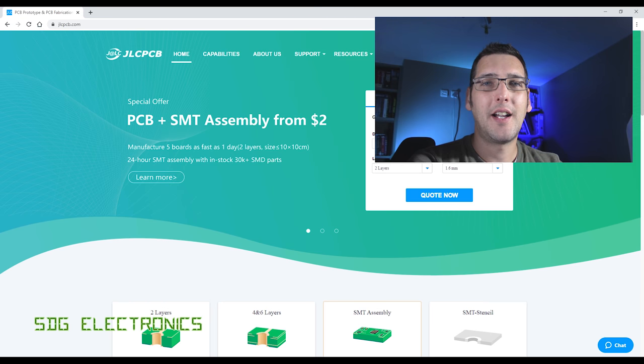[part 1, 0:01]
Hi, today I thought we'd continue with the LED ring light project, and we'll actually go through step by step, selecting the parts, the general topology, and actually designing the electronics to go on the LED ring light. So let's get started looking at the LEDs.
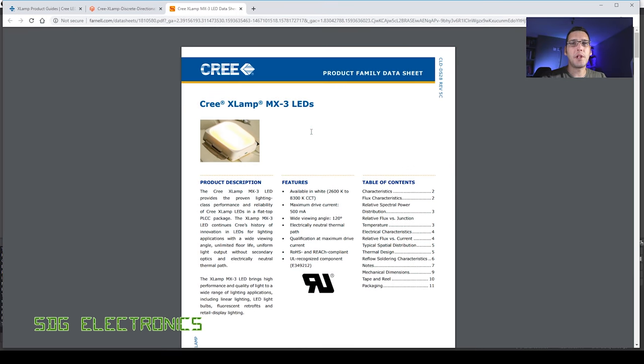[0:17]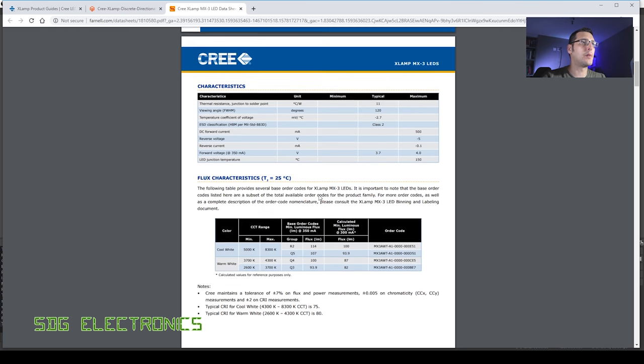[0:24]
So the LEDs that we used on the prototype board were these Cree XLamp MX3 LEDs, and we had 8 of them on the board, and driving them at 300 milliamps, we're getting around 100 lumens per LED, or 800 lumens in total. So that's a kind of benchmark that we want to aim for, because that was giving us more light into the microscope than any of the ring lights that I've got in the lab. And with the addition of some collimating lenses or some other optics, we'll increase that light output even further.
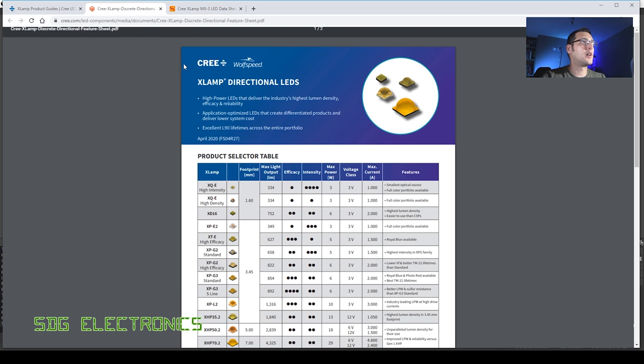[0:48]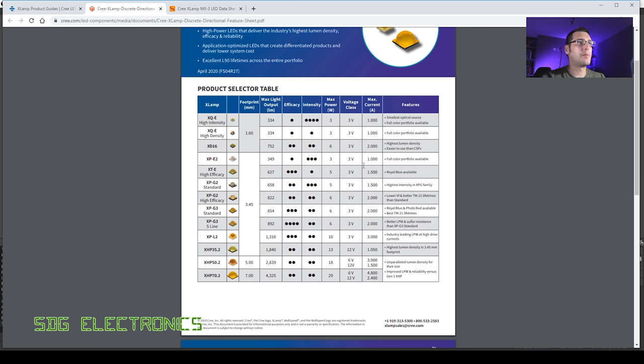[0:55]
So here we've got the Cree XLamp directional LEDs comparison table. And the thing that's important in this design is probably the efficiency, because we haven't really got the luxury for big heat sinks. It's going to be hanging off the lens, so we don't want loads of weight on this board. So what we've got here is a comparison table where we can quickly see the efficacy of various different types of LEDs. And immediately we can see these Cree XTE LEDs are pretty good.
And then we've got the XPG 3s in two different variants. So we've got the standard and then the S line. I suspect the S line LEDs are either a little bit more tricky to find or just more expensive. But these are looking pretty good. And at their test current, you can see here that we're getting LED outputs very close to actually what we're going to get from the entire design. So if we have 4 of these, then we're definitely going to be in the area that we want to be aiming for. So let's have a look at DigiKey and see if we can actually get hold of some of these.
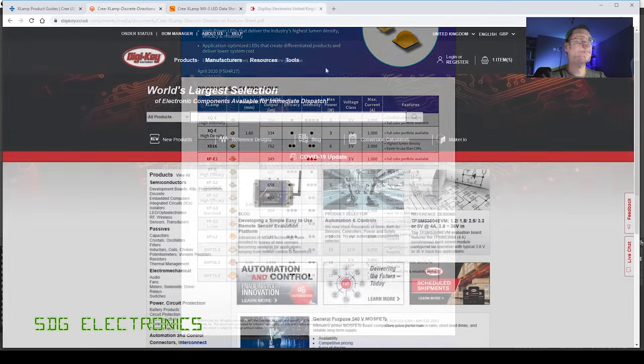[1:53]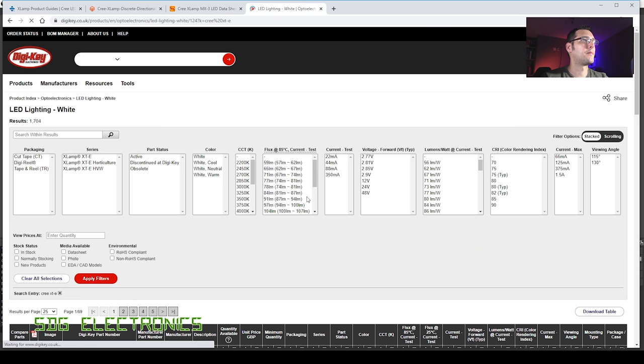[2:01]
So we'll start by looking at the Cree XTEs. And we want to be looking for active parts and not obsolete ones, and also in stock, because I do actually want to order these parts. And probably the most important thing that we've got here is the colour rendering index, because we do want to be able to identify colours quite well. Let's have a look at those with a CRI of 90, and you can see we've got a problem here. So we've got 0 remaining, about 85, and still 0 remaining. So those are looking pretty poor from DigiKey.
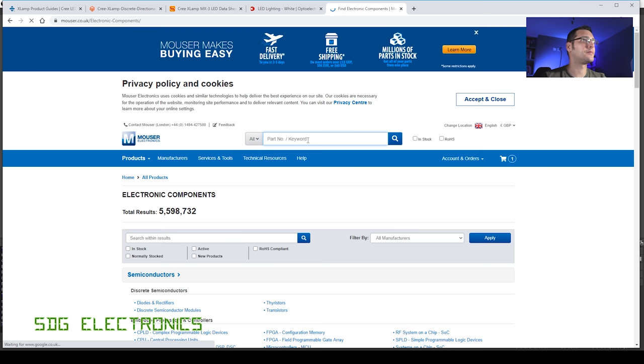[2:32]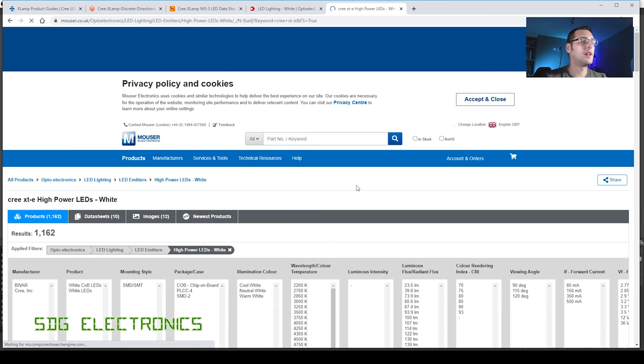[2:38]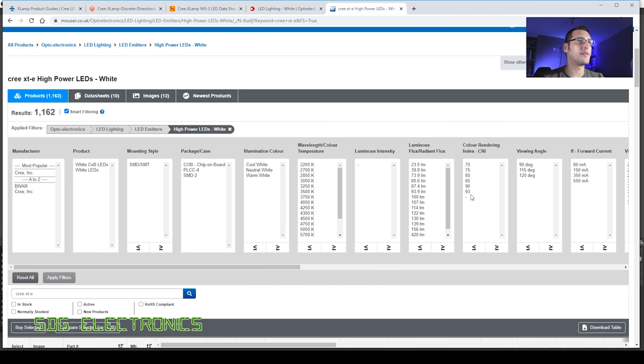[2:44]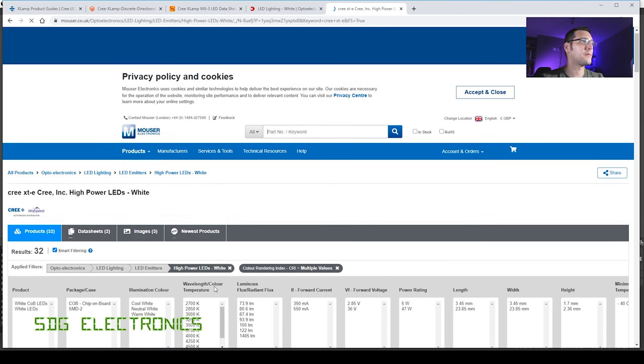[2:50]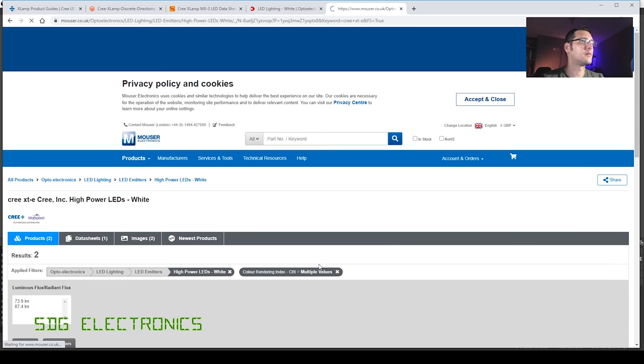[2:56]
We can also look at Mouser. But I suspect if DigiKey haven't got them, then Mouser won't either. Now, for whatever reason, these LEDs are always the most difficult to search for. I always spend ages trying to find the actual LED that I want to use. So, again, 90 and 93. And have they got any in stock? And they do actually have 2 of these in stock.
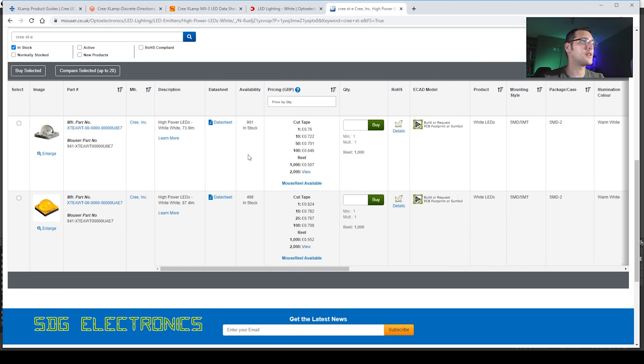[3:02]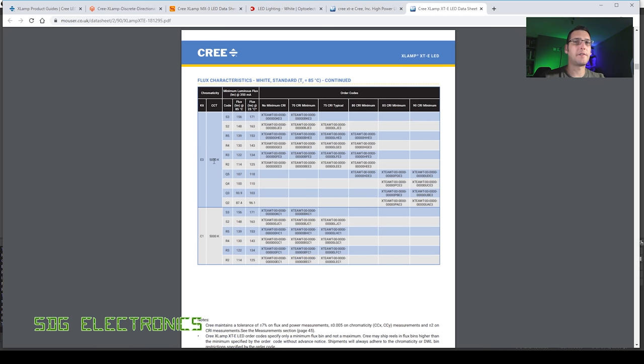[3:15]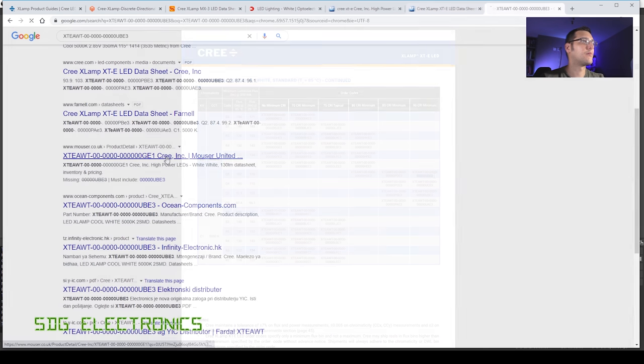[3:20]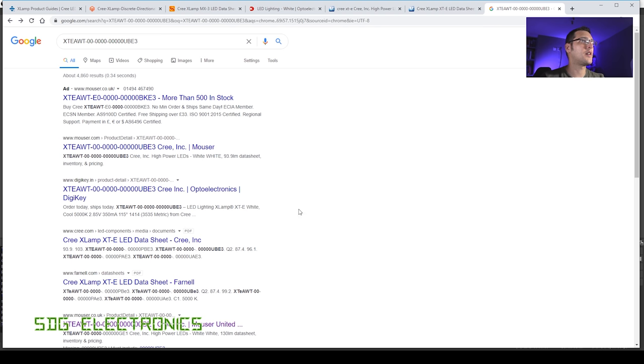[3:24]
Let's have a look what these are. Warm white and warm white, so it's probably not going to do the job. We do want something in the region of 5000 Kelvin so that we get the colour temperature correct, so I don't think these are going to be correct. So here are the 5000 Kelvin items, CRI of 90. No, so it's not looking good for the Cree XTEs.
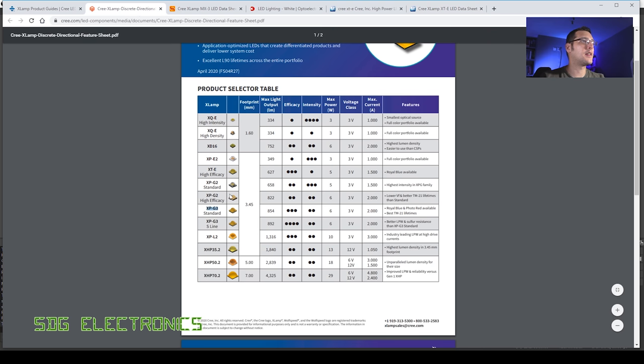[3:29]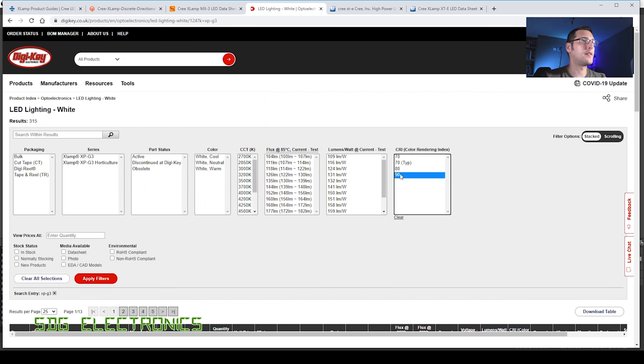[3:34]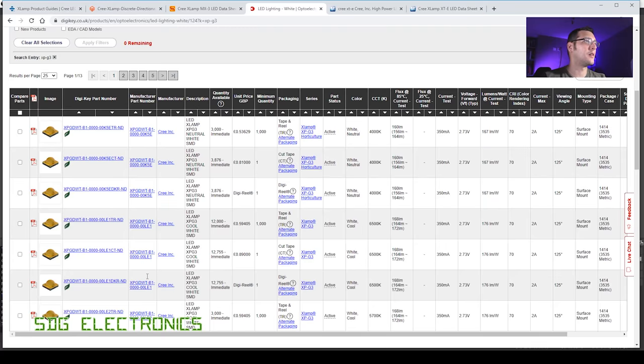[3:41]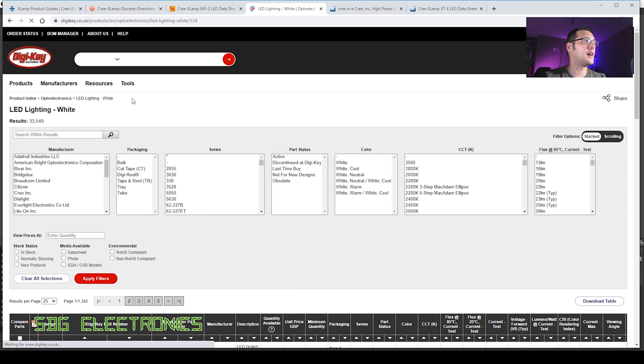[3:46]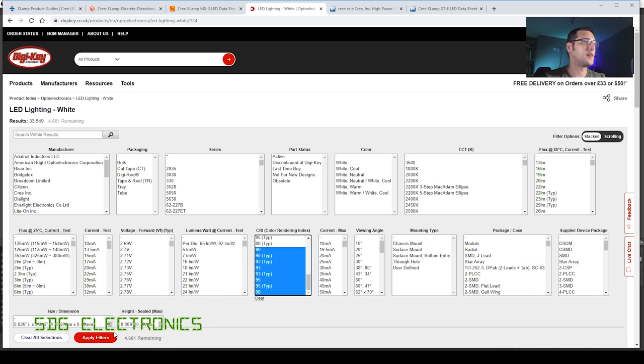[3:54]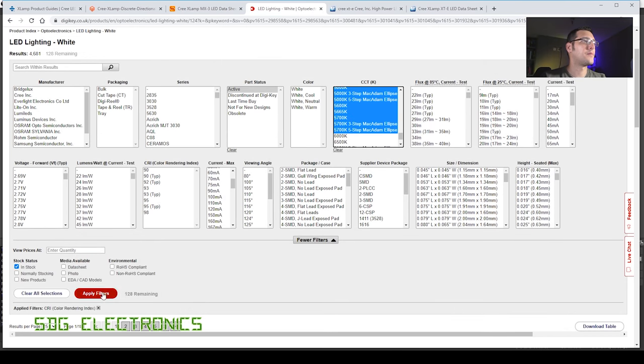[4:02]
Let's try looking at the next ones, which are the XPG3s. And again, CRI of 90, 70 remaining. Active item 62. Have we got any in stock? Nope. So that's a little bit frustrating. Let's have a look at the DigiKey search instead and just see if they have actually got anything with a high CRI. So we've got some very high CRI devices on here. And we want active parts in stock. 128 remaining. Let's see what we've got.
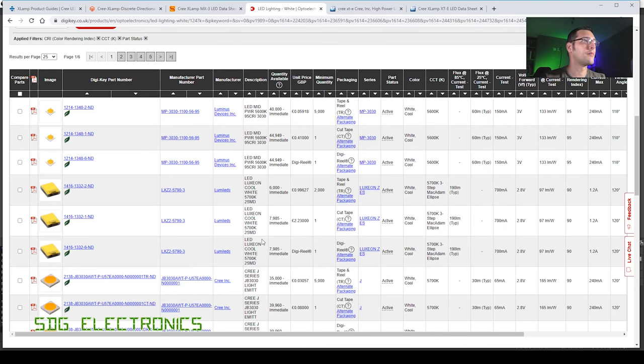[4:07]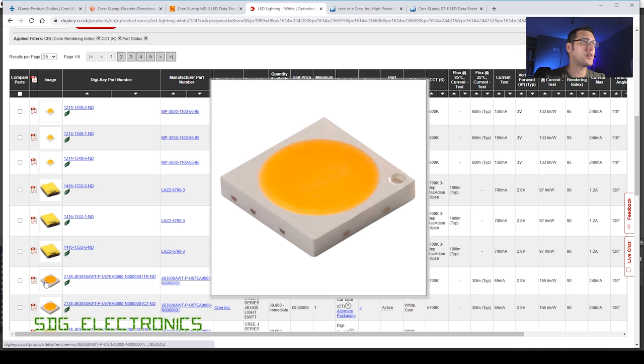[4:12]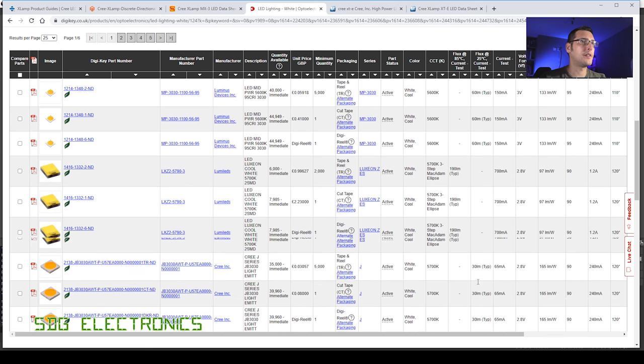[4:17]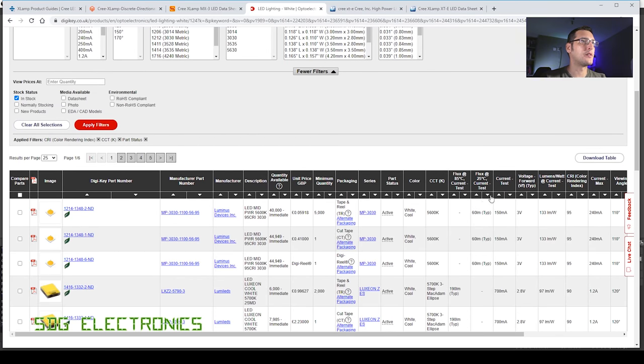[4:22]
So we've got some from LumiLEDs. We've got some pretty small ones, which are these Cree ones. They're not really in the right region here. 30 lumens isn't going to do the job. Let's also sort by that. So we've got a couple of options here. Unfortunately, none of them are perfect, but we've got this Luxeon Z LED, which only has an output of 190 lumens, but it has a really good colour rendering index of 90 and is relatively cheap, £2.23, so we can have 4 of those and it not be too expensive.
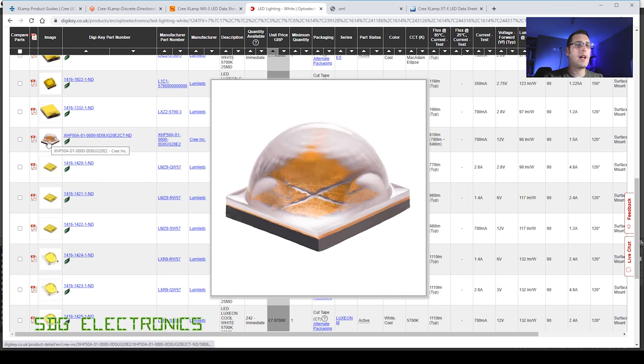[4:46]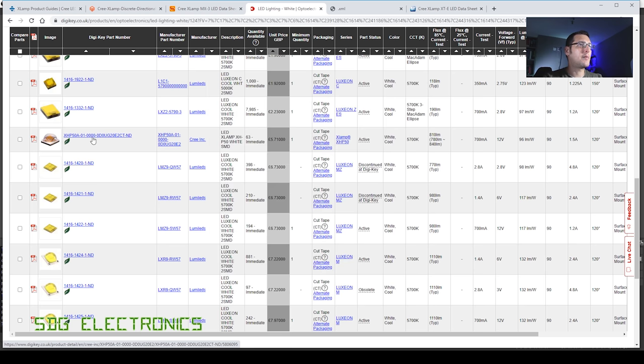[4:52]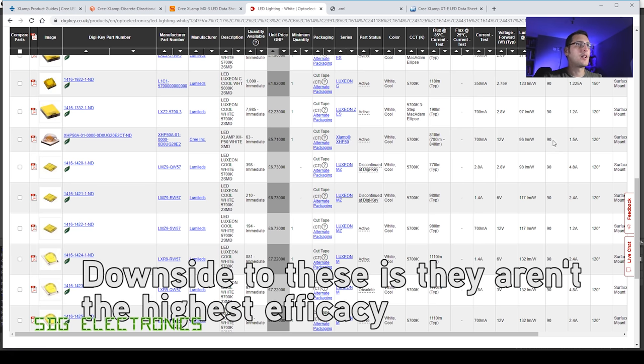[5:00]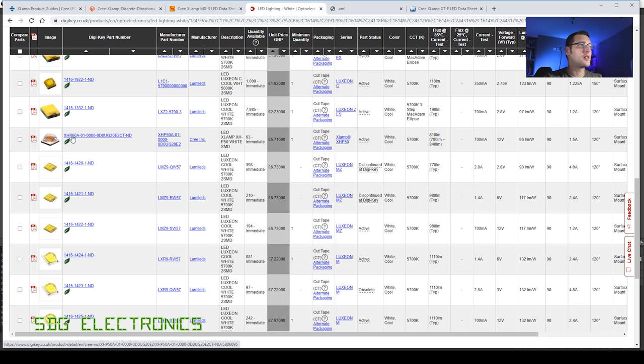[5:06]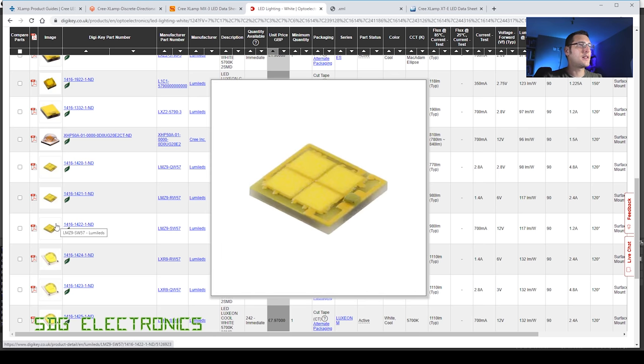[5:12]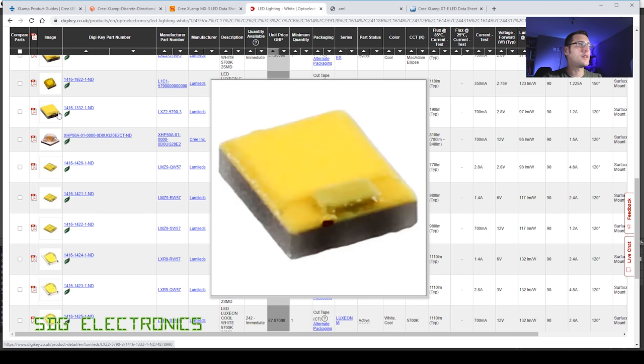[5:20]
Next choice would be this Cree XHP50, which I think is the one that was in that torch that I reviewed quite a long time ago. These are really high output LEDs, way more than we need, but possibly what we could do here is just underdrive it and again we'll get a decent colour rendering index. And I know that there are plenty of optics available for the Cree XHP50s. The other option here is these Luxeon LMZ9s, which basically just look like four of the Luxeon Z dies on one chip. These are a little bit tricky to handle, along with the Luxeon Z. They're really quite small. So I think we're going to look at this Cree XHP50A.
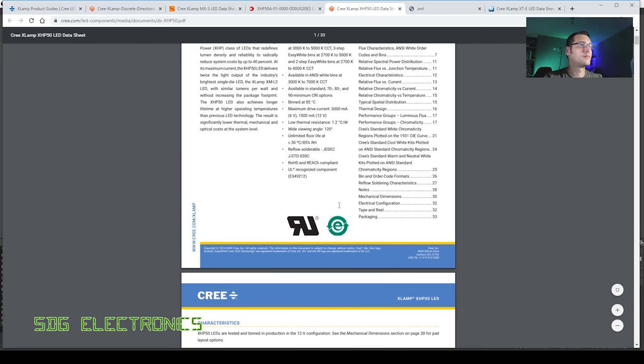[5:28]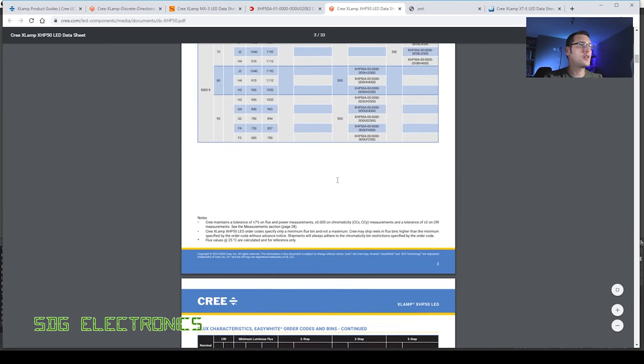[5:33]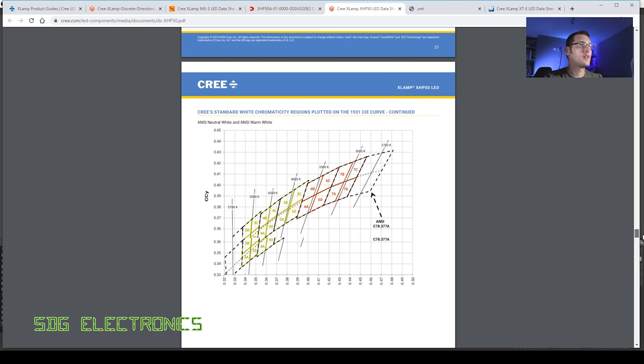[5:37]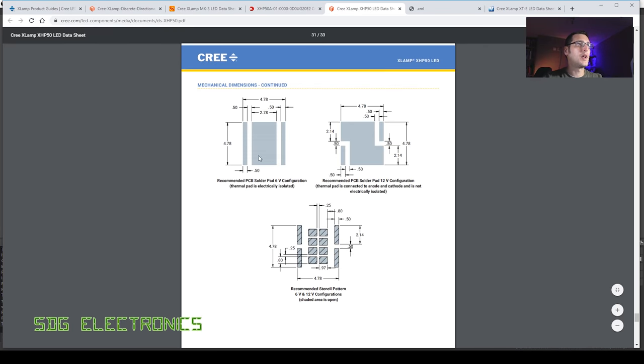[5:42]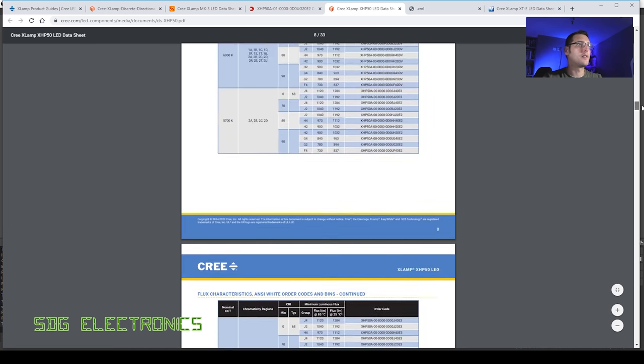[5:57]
And so it looks like it's got two banks of LEDs in it. No internal schematic of the LED. But here you can see you can either have the two lots of LEDs in parallel, so 6 volts, it looks like two dies by two dies, or you can have them in series to give a 12 volt input voltage at their rated current. So these could do the job.
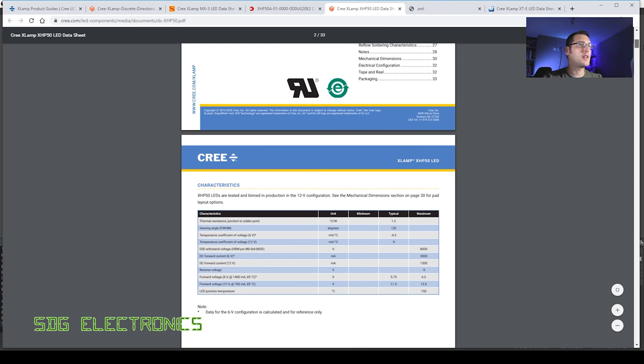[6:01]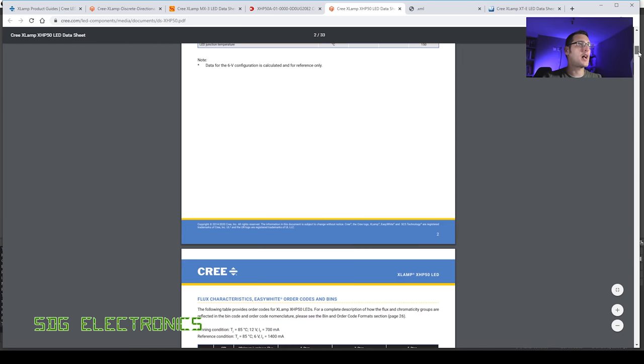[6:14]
Again, we probably don't need to drive them anywhere near their maximum, and we wouldn't be able to dissipate all that heat anyway. But these are quite big devices, 5 by 5 millimeters or so. So quite easy to handle. The footprint shouldn't be too much of a challenge. Let's see if we can find some optics for this part.
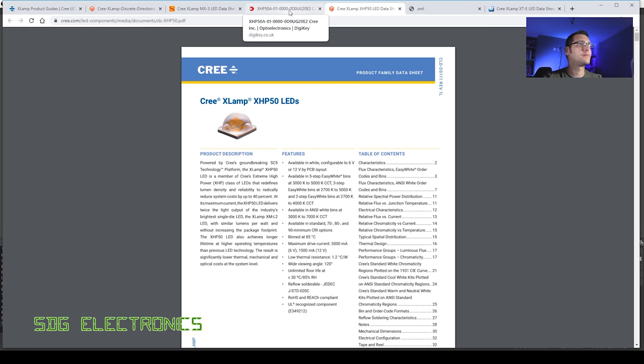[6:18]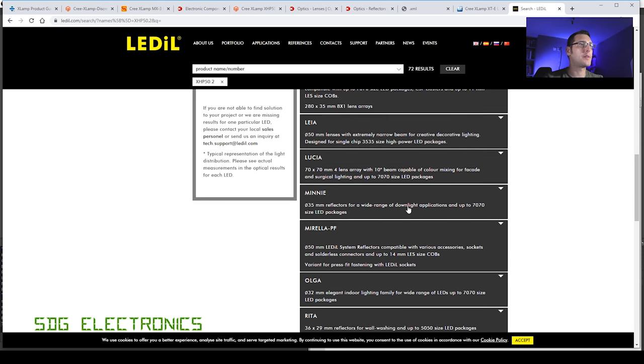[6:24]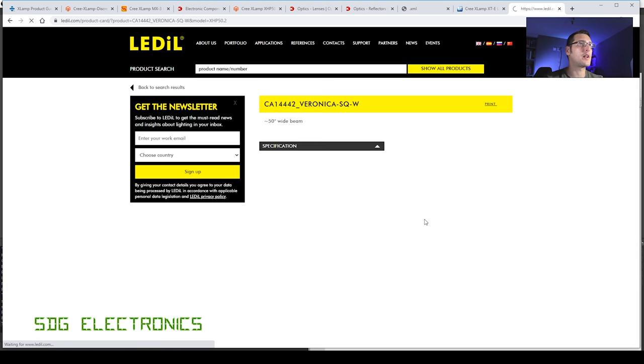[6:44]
So for the optics, we can look on the LEDIL website. They tend to do most of the optics for these parts. We want to look for something that's relatively small in terms of the lens size. So we've got some here that are 22 by 22 millimeters or so. 50 degree beam, so it's a little bit wider than probably what we need, but it's a frosted lens, and we saw previously that gives us the best results. Let's see if we can actually get hold of one of these.
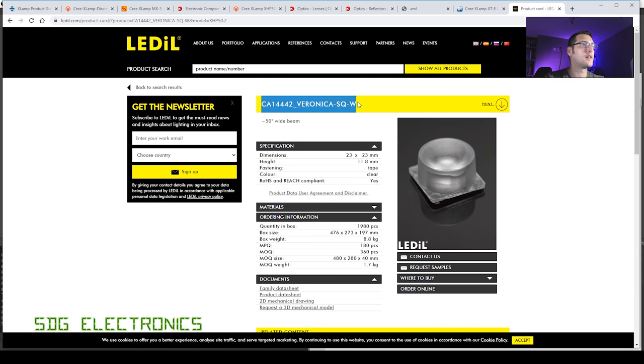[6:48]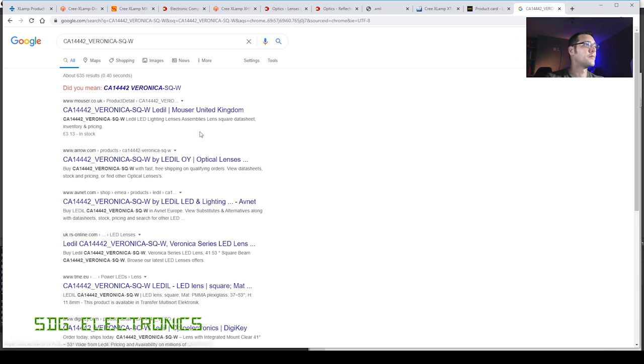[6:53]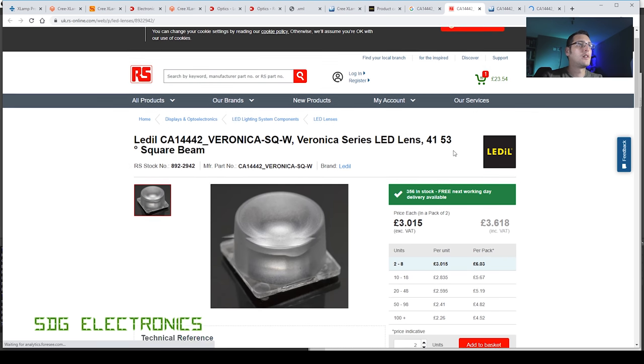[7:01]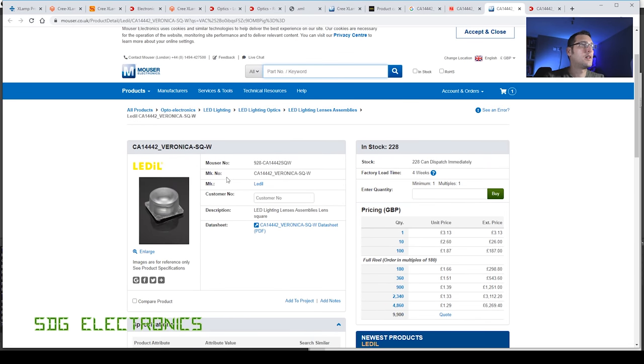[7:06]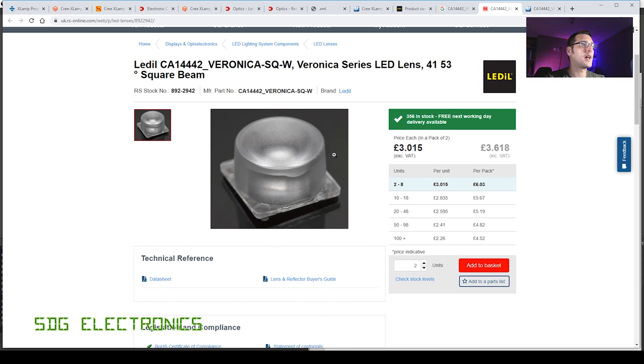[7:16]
It basically looks like this. See if we can find it anywhere. Mouser and RS and DigiKey as well. So they've got those. Plenty in stock at RS. Plenty in stock at Mouser. And none at DigiKey, so that one, that looks probably fine. I think we're quite good with that. That looks quite reasonable. It looks like you heat stake this into your PCB as well, so quite easy mounting. So we'll add that to the list.
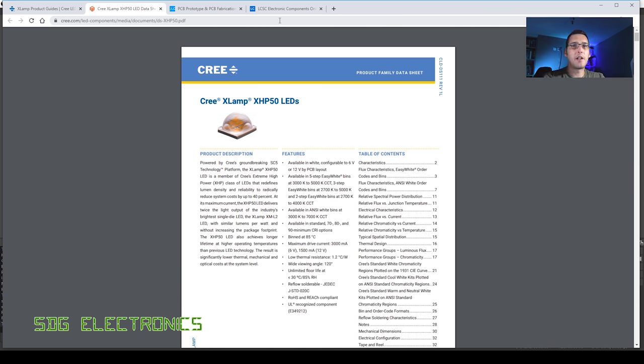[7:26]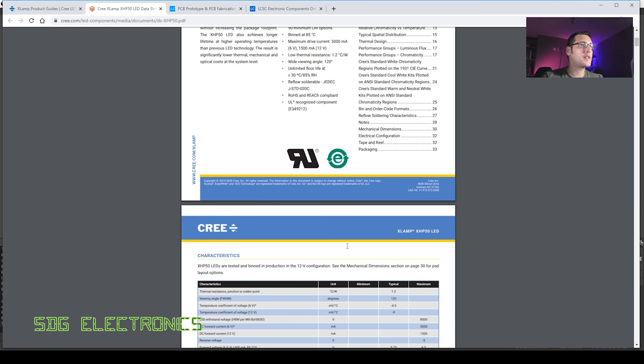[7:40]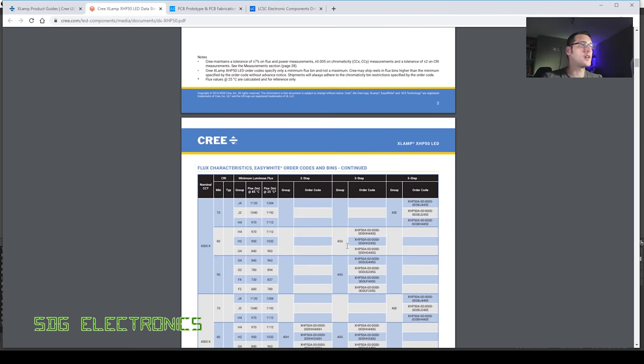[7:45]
So now we can start looking at the actual electronics. Now that we've chosen our LED, we know roughly how we want to be able to drive it. We definitely don't need to be able to drive this LED at 3 amps. We're just not going to be able to dissipate that kind of heat on the PCB. Let's have a look and see if we've got any curves for what the luminous intensity is versus current. We may need a slightly different data sheet for this.
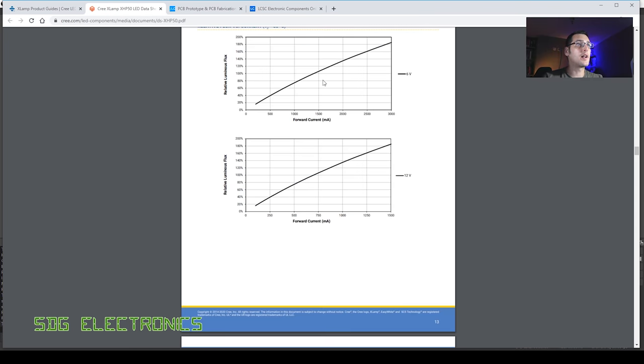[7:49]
So actually it looks like at 3 amps we're massively overdriving this LED. It's got the relative luminous flux here, which is basically compared to the value that they've given in the data sheet. So 800 lumens at 100% is actually 1.5 amps at 6 volts. So if we know that, then we know roughly we can scale that back. Even 50% is more than sufficient.
So actually we're probably fine just driving this LED with a standard 700 milliamp LED driver. And we know that we're going to be able to get about 50% of that light output. So we'll be able to get 400 lumens from one LED, which is pretty good. So now we know we need to aim for something in the region of 0 to 1 amps. With 6 volt per LED, we can start looking for some driver chips.
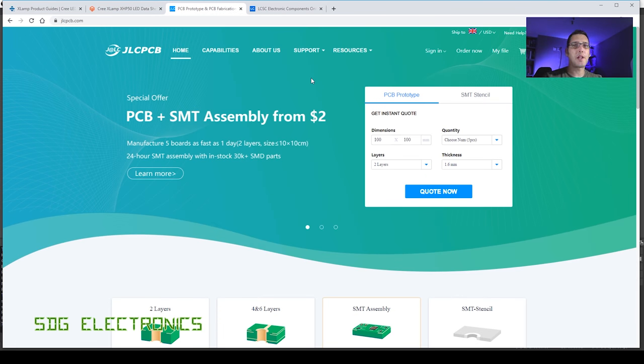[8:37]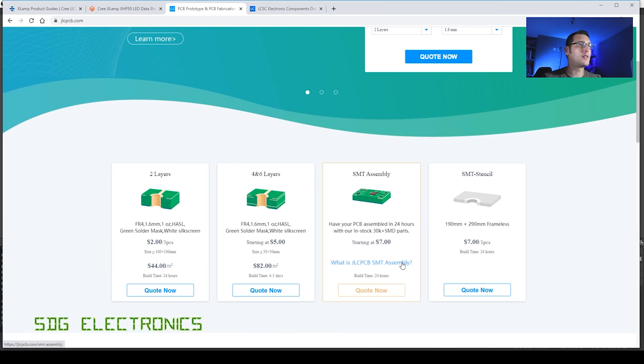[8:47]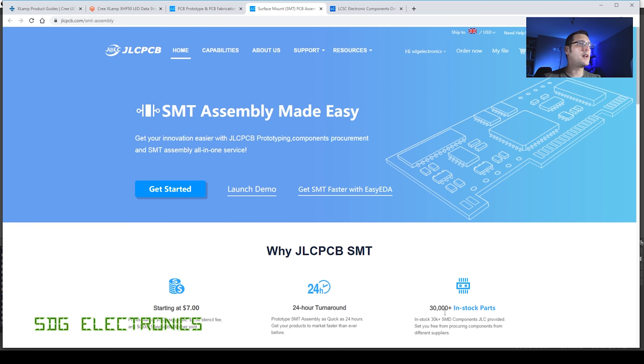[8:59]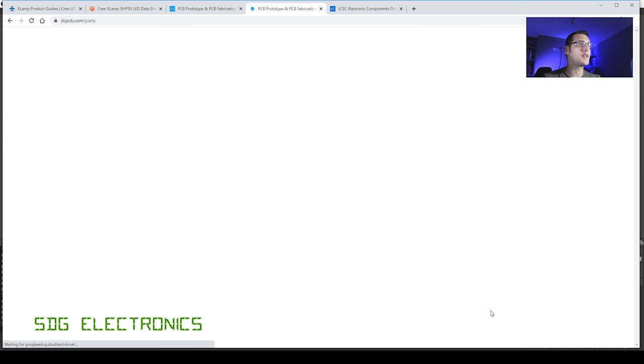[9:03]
So I've brought up the JLC PCB website because most likely I'm going to try and get as much of this PCB assembled as possible. We're going to order the boards from here and try and use parts mainly that they've got in stock. I don't know how feasible that actually is, and it will be quite a simple PCB, so it may not be too much of a burden to assemble. But if you go onto this page here, you can see what parts they've actually got available for assembly.
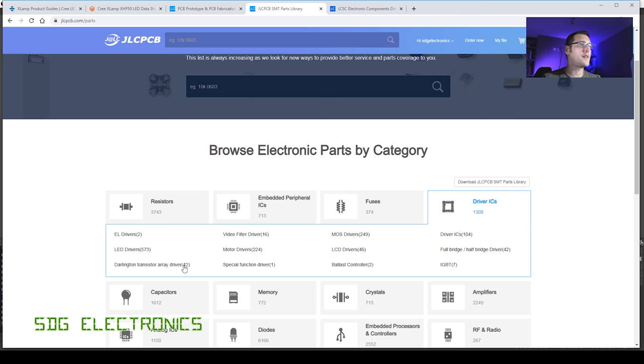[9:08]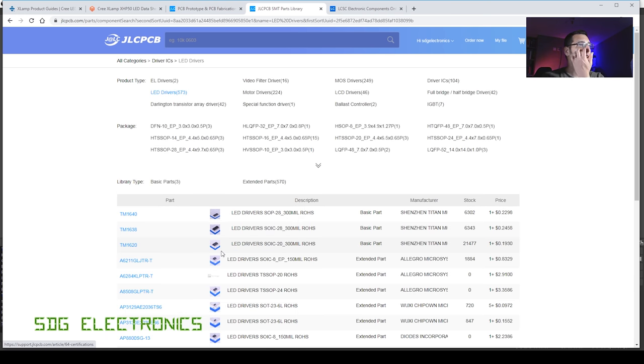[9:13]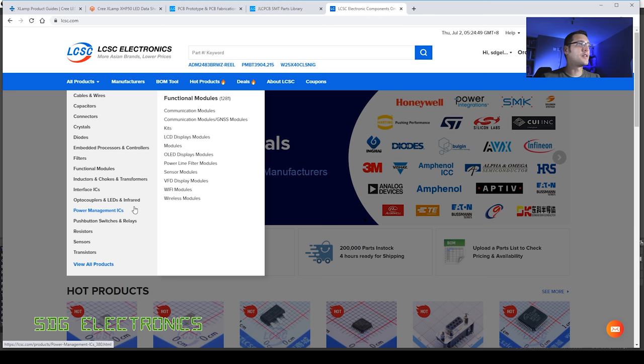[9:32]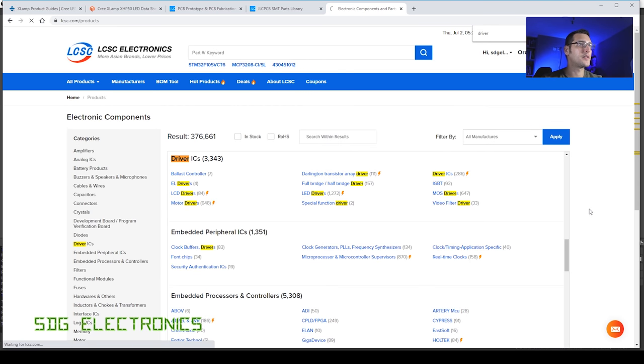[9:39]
Now, you can sort of do a search in here. So we've got driver ICs, and then we've got LED drivers. We've got 573 available. But the search at this point then is quite poor. You don't really want to be searching for parts on here. You can't see what's in stock because you can't search by the amount of stock that they've got. And as you can see, they often have parts that aren't available. So let's have a look at LCSC. And unfortunately, they don't have everything that they have at LCSC, but often you can see what kinds of things they're going to have. LED drivers.
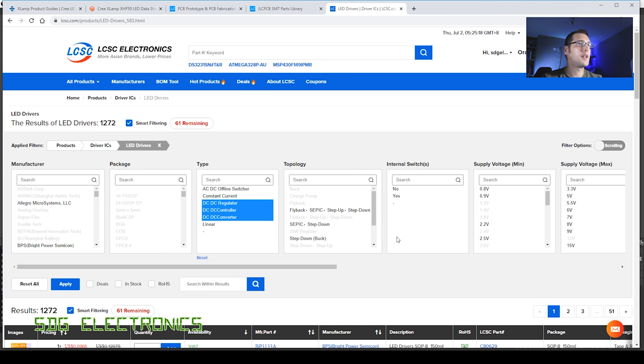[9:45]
And we're doing DC to DC conversion. Now, one thing that we do want to think about is the DC to DC converter design. Almost certainly we want a DC to DC in terms of the efficiency, but we want to make sure that we don't then see any of the ripple on the camera that we've got attached to the microscope. So we do want to try and use something that's relatively high frequency so that that doesn't show up in the actual image.
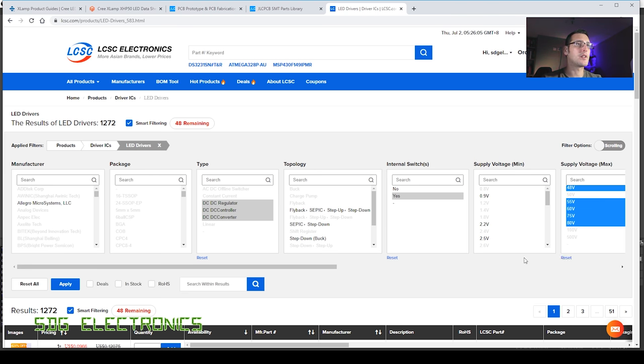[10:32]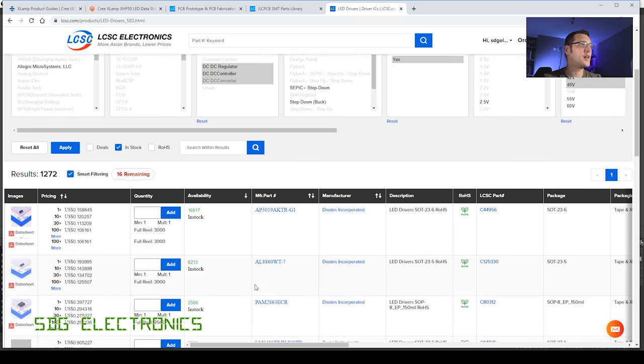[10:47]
Now we picked the DC to DCs with internal switch. We probably do want these because we're probably going to end up with four LED drivers on this PCB, I would imagine. And we want LED drivers with an input voltage of at least 15 volts, because that means we can run two of the LEDs in series, so we're already off to a good start there. I'll actually narrow down that selection because these are probably ones for mains powered LEDs. Let's leave it at 48 volts in stock and see what we're left with here.
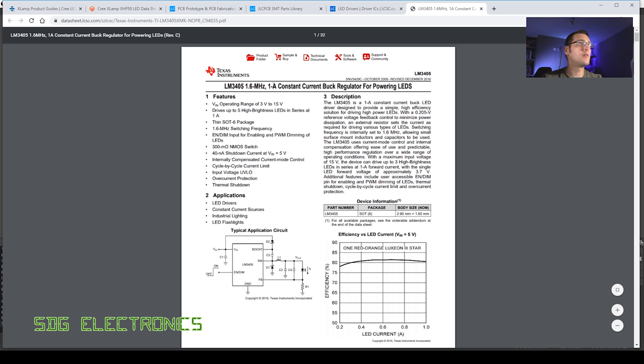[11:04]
So we've got one here from Texas Instruments. I'm first of all looking out for the bigger names and the ones that have any simulation capabilities. TI always have the models available to look at on the website. Let's have a look at what this actually is. So this is a 1 amp output, and we do have a dimming pin, so we would be able to decrease the brightness. One thing to note about that dimming pin is it does ideally want to be an analog input so that we don't then superimpose our lower frequency PWM waveform, which then again will show up on the camera. Alternatively, if it is PWM, which it does look like, we want to be able to feed in a relatively high frequency. So let's see what this datasheet is saying. So 1 amp, 3 to 15 volts, so we'll be able to run two of those LEDs in series.
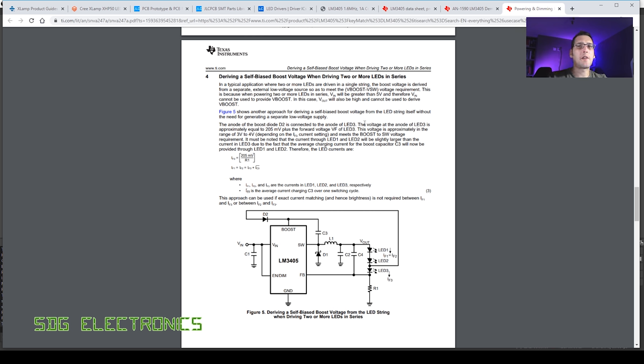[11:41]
So unfortunately, after having a look through some of the datasheets, it looks like it's not quite as straightforward with this device because it needs a very specific voltage on the boost pin. And when you've got LED arrays, which is basically what we're going to have, it's a little bit more difficult to derive that, and it doesn't look like we're going to be able to do that with these LEDs that need 6 volts or 12 volts. So we're going to have to can the idea of the LM3405.
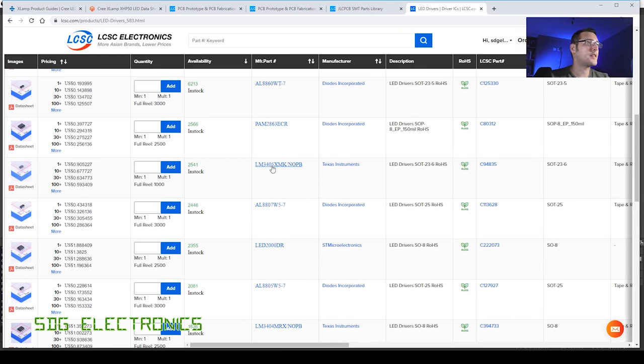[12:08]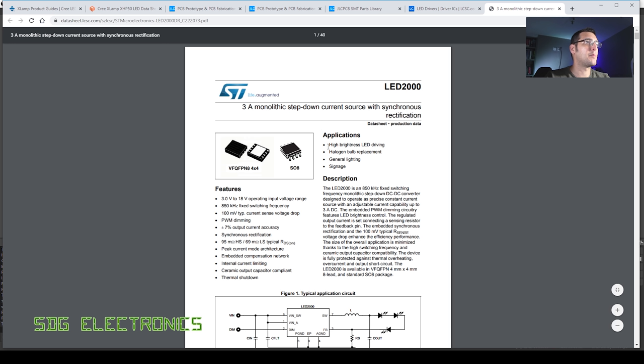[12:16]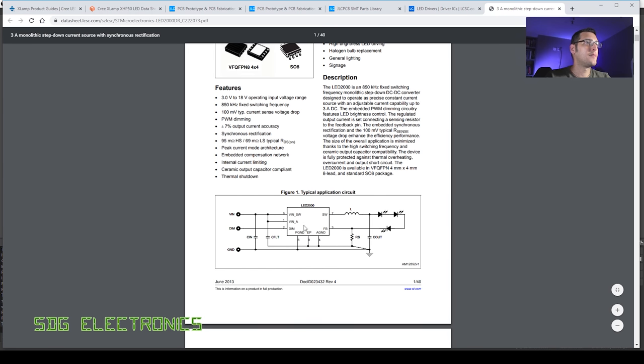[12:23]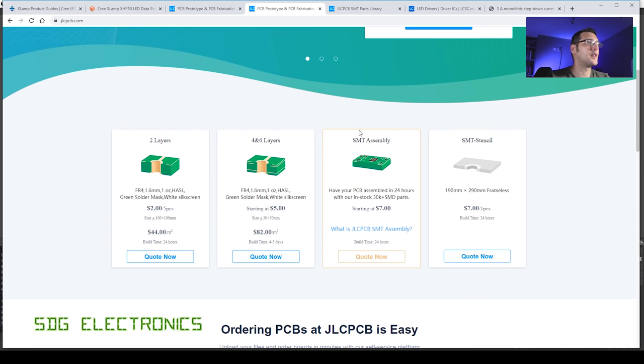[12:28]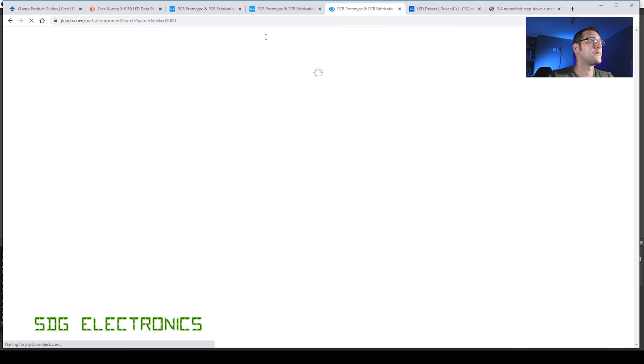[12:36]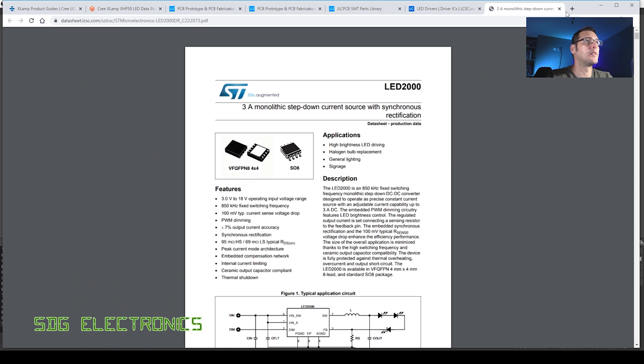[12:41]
So other parts in the list are the LED2000DR. Let's have a look at that one. That's a 3 amp step down current source, 850 kilohertz switching frequency. And the topology looks fairly straightforward. Let's see if they've got any of those actually in stock. So that was the LED2000. And so no, unfortunately no stock, so we'll cut that one out.
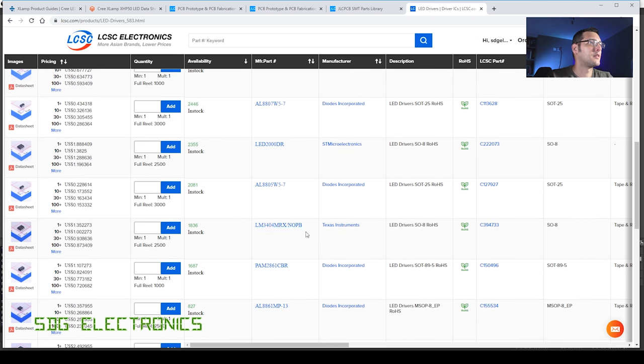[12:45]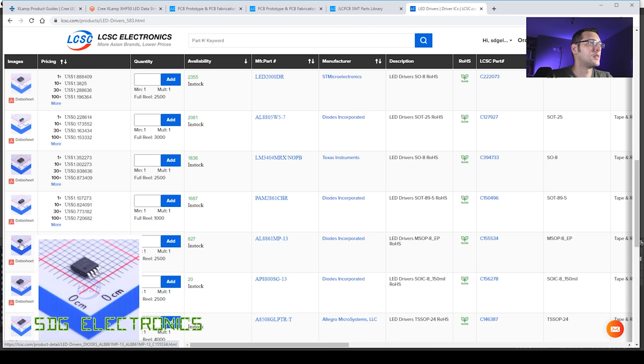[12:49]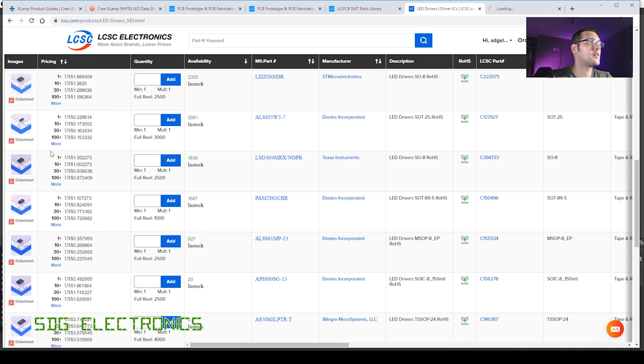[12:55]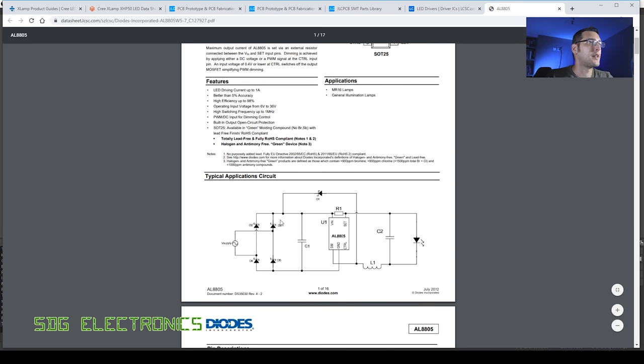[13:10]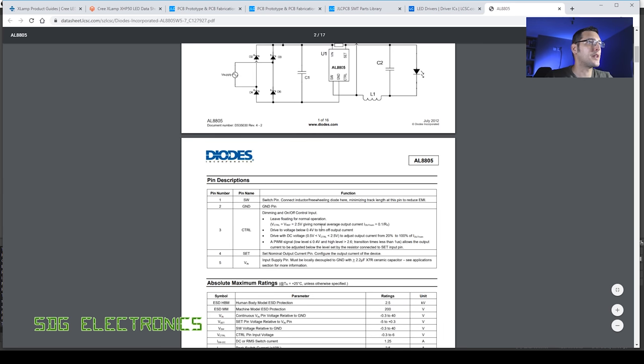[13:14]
Got some here from Diodes Inc. See what this part is. It's quite a low cost device, 22 cents. 6 volts all the way up to 36 volts, so we could even drive all four LEDs in one go with this one. Switching frequency up to 1 megahertz and up to 1 amp. So actually, this one looks like it could do everything. We'd only need one of these parts in the entire design.
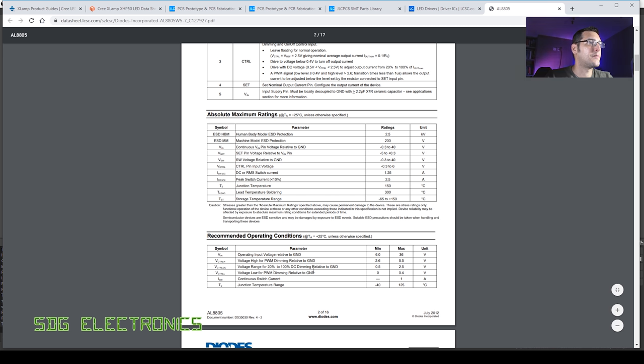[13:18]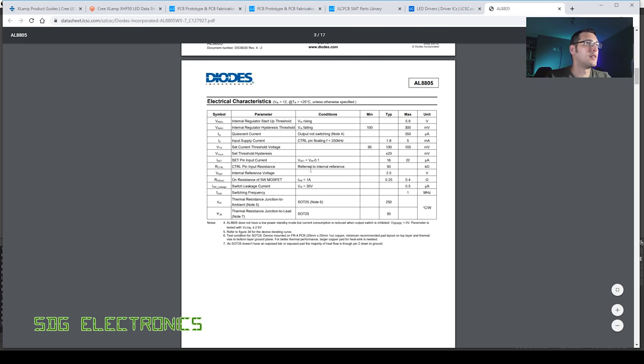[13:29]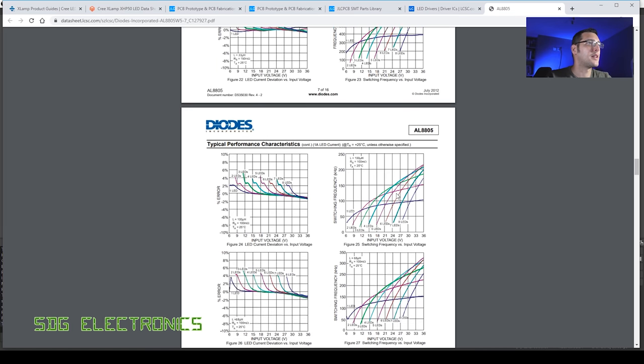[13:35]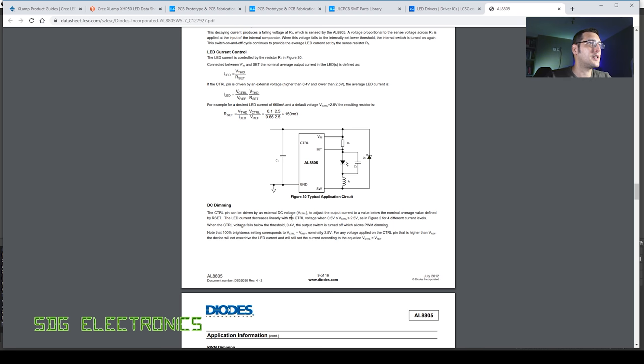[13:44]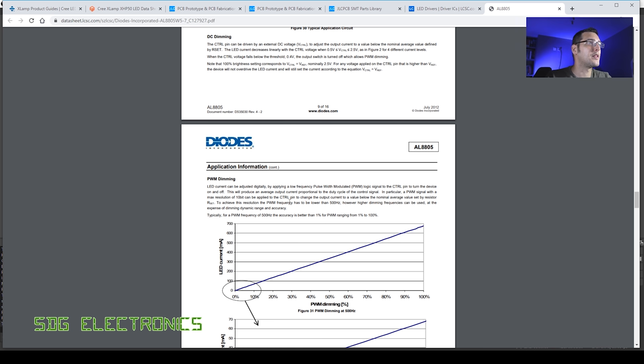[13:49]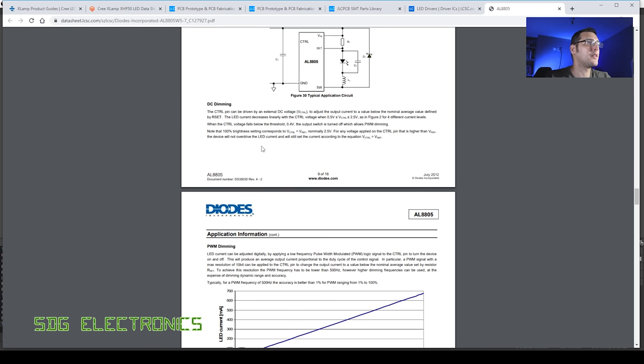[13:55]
Dimming range 20 to 100%. Now, in terms of the dimming, actually, I'm only likely to need two dimming levels, 50% and 100% probably. We might want to tweak the value, but we can usually do that with the current sense resistor. I don't really want to have a microcontroller or any software on this board. I just want it to be a standalone ring light that just works. DC dimming. So it can be done with a control voltage rather than PWM, so that's pretty good. Because, as I said, with the PWM dimming, we may end up seeing that on the camera. So this actually looks like quite a decent device.
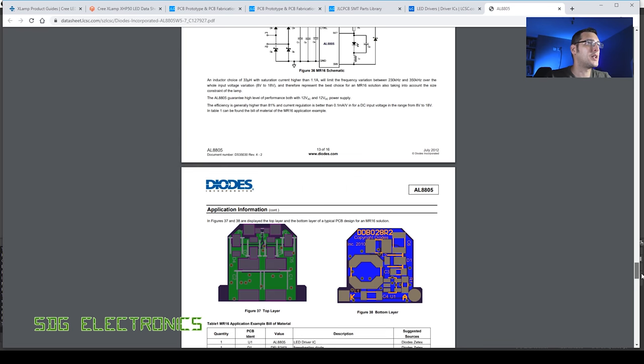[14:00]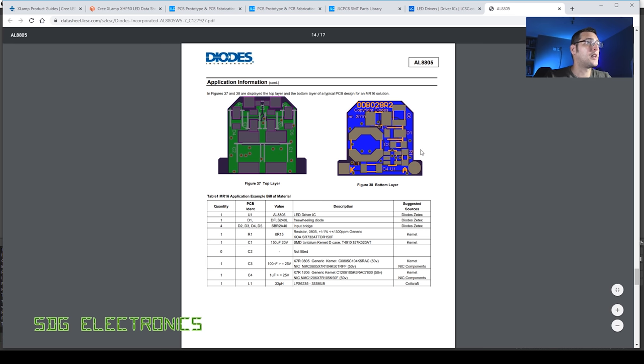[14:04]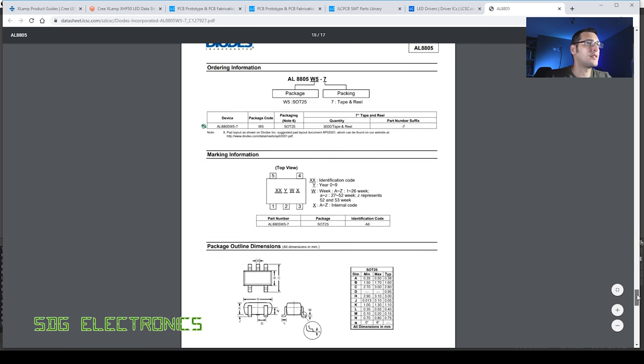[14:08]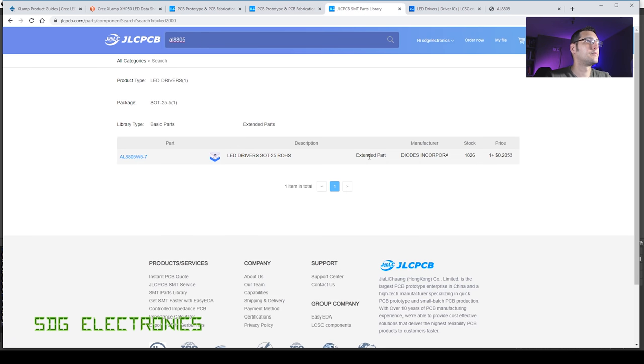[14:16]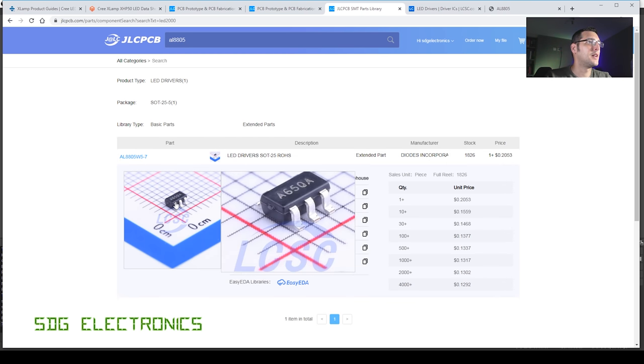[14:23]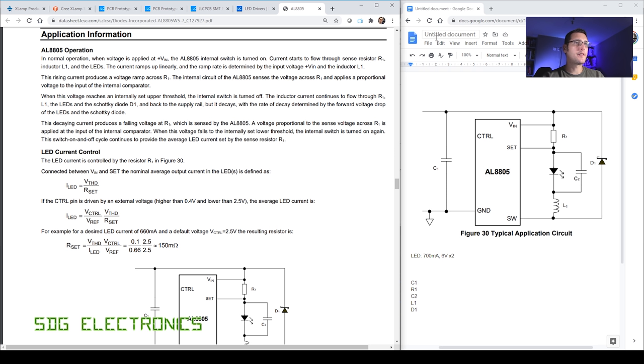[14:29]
Now the next stage is to fill in the blanks. We know that the LEDs that we're using, we want to drive them at 700 milliamps maximum, and to keep things straightforward, I think we don't want to use any excessive input voltages. 24 volts is probably the practical limit, therefore with their operating voltage somewhere in the region of 6 volts, we're probably going to need two of these AL8805 drivers so that we can drive two LEDs per driver. With four in series, that's 24 volts, and then there's no headroom for the actual driver to do the switching and the sensing. So yeah, we definitely need to use two different drivers.
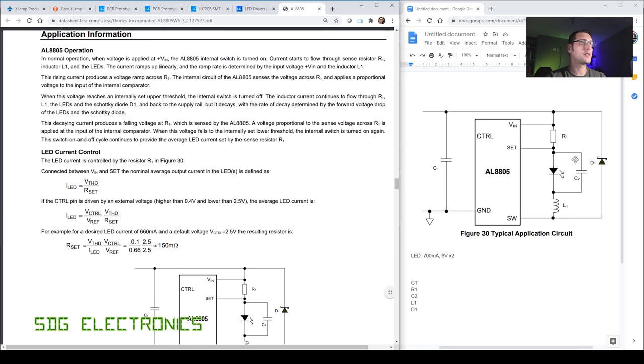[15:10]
So in the datasheet, they describe how to calculate the various components. For R1, that is the current setting resistor, and unusually on this design, the current setting resistor is on the high side. Normally that's switched down to ground. And they've written this in really quite an odd way in the LED current control section.
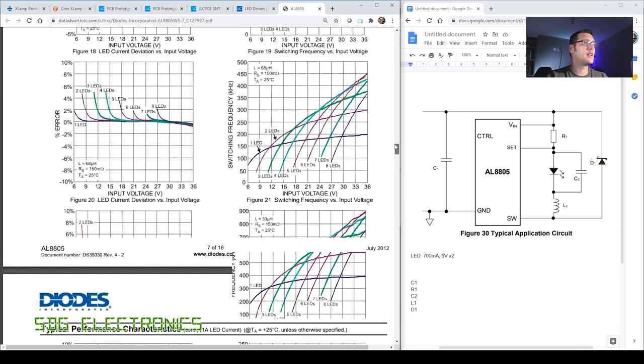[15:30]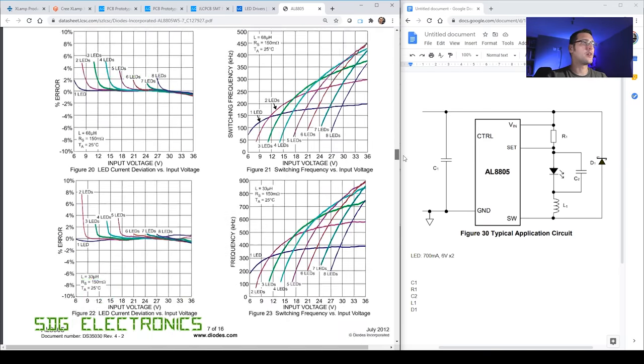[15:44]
Basically, if you look at the earlier table, you can see here that the set current threshold voltage is the voltage that it's trying to achieve across R1. So 100 millivolts is what we're trying to control. Therefore, if we want our 700 milliamp drive current, we can simply do 0.1 divided by 0.7 volts, which gives us about 142 milliohms. So somewhere in the region of that.
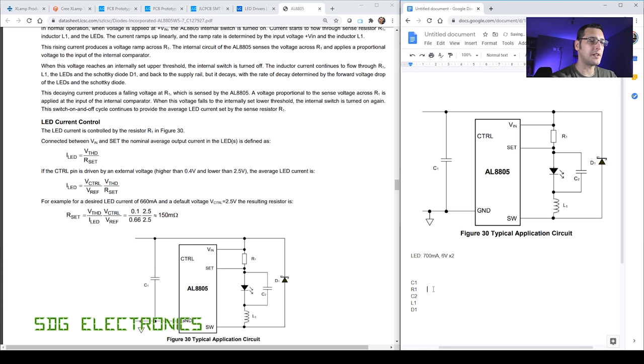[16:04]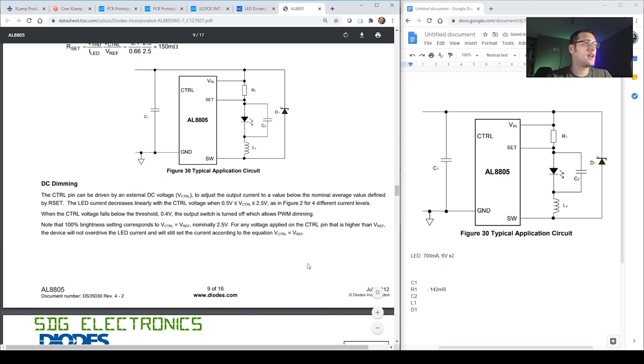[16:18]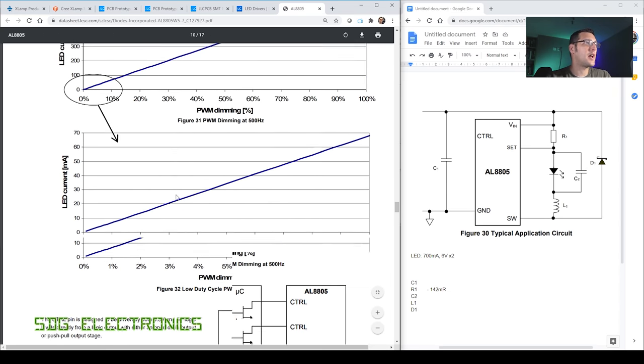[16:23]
We don't need to be too critical because we have got the current control setting voltage here, which we're going to be using for dimming the LED up and down. So 142 milliohms. And then let's look at the next section. So we don't need to be concerned about the dimming just yet.
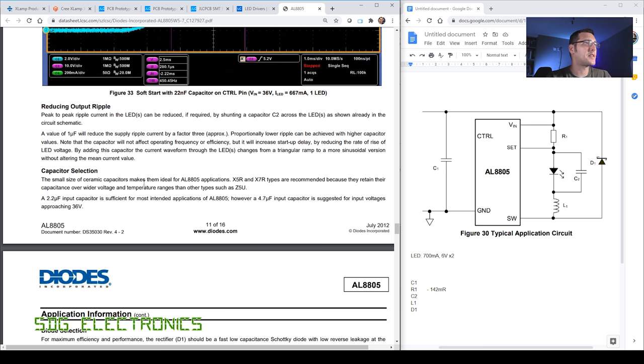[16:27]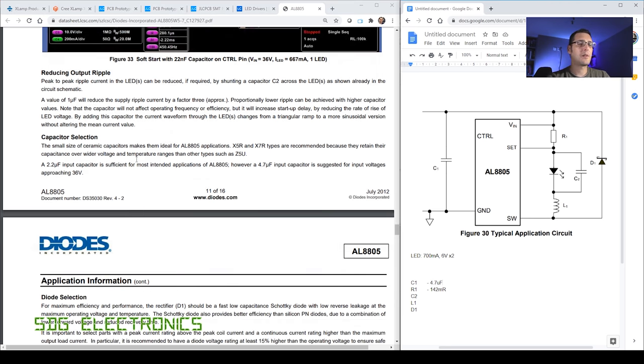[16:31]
We then want to have a look at the capacitor selection and reducing the output ripple. So compared with some of the datasheets from TI and Linear Technology, there's not a lot of hugely technical information in this datasheet. If you take, for example, the input capacitor C1, all they've written here is a 2.2 microfarad capacitor is generally okay. However, you might want to use a 4.7 microfarad capacitor if the input voltages are higher. So not hugely descriptive there.
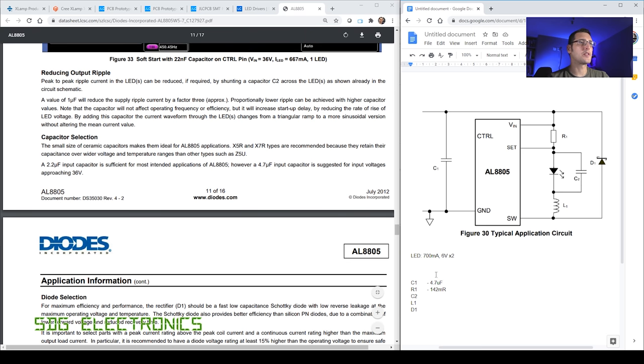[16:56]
We'll probably end up using just a couple of ceramic capacitors if we can find them with a suitable voltage rating to achieve that sort of 4.7 microfarads. At the input to the IC, we probably still will have one biggish electrolytic on the input to the PCB. So I've noted down 4.7 microfarads there. They've also just said that you can decrease the ripple current on the output, which will improve the LED performance. Just adding one microfarad across the LED will improve the ripple current by a huge amount, so by a factor of three. So we'll add in that one microfarad.
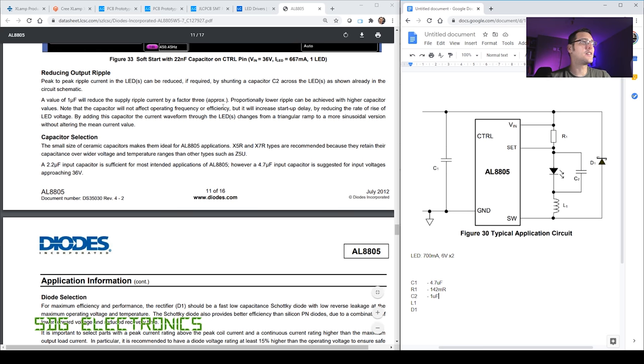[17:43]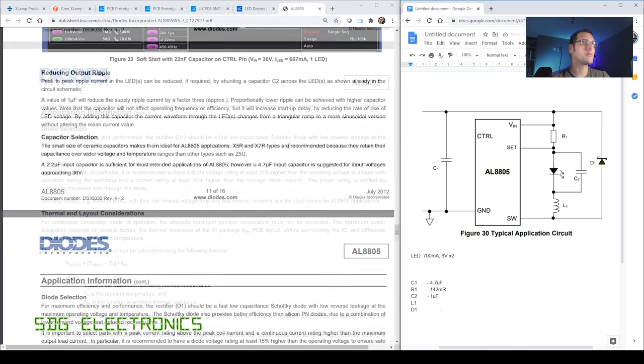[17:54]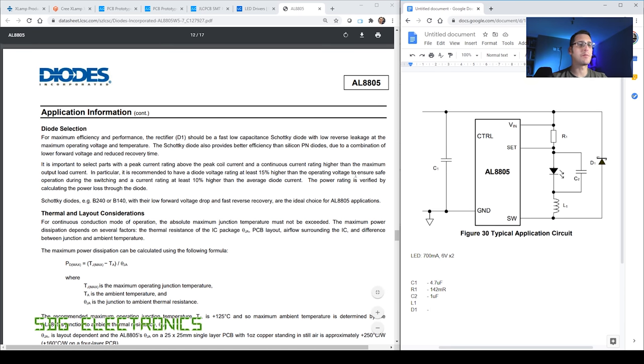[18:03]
We may be able to find something a little bit juicier than that just to give us slightly better ripple current, but I don't like these datasheets a huge amount because it does look like you're generally just guessing component parts. There's no calculations here that we're really doing to give us pinpoint accuracy on those components that we need to use. And again, if you look at the diode selection, they've been really vague here. It just basically says use a Schottky diode with a voltage rating at least 15% higher than the operating voltage. So not a lot, again, to go on.
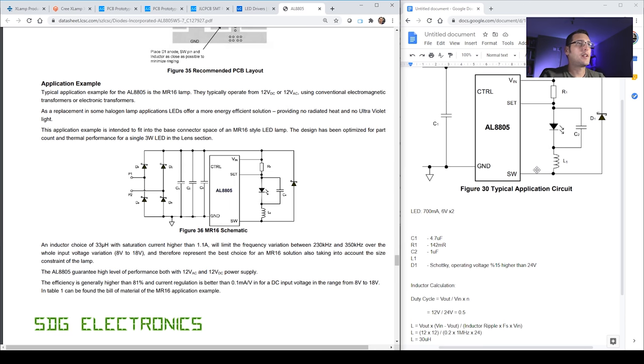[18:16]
Normally, again, what you see in the TI datasheets, they'll give some recommended parts that have low capacitance or are more suited to the design. So really vague stuff here. Now, unfortunately, again, they've been really brief in the datasheet and there's actually no information about inductor selection. They've just got this one example here saying about using a 33 microhenry in this application, but absolutely no information about how they've got there.
Now, what we do know is that this device is capable of having a switching frequency of 1 MHz. We know our input voltage is going to be 24 volts in this application, and that our output voltage is also going to be about 12 volts. Although we're doing current control, our actual output voltage is still around 12 volts, so we can estimate the inductor value based on that. We know the duty cycle, therefore, is around 0.5 because our input voltage is 24 and our output is around 12 volts.
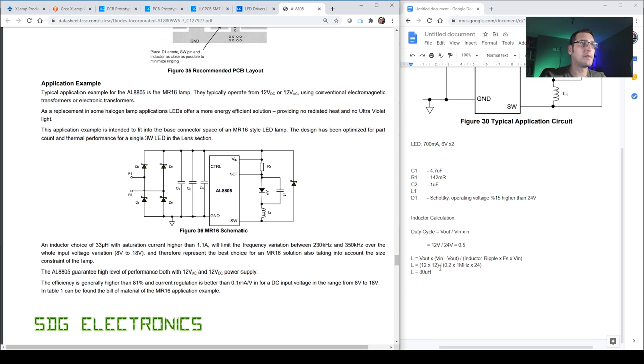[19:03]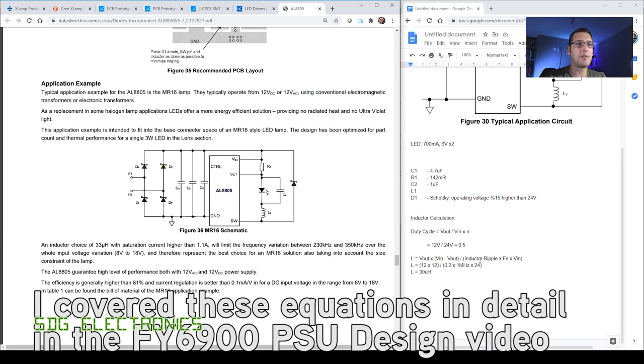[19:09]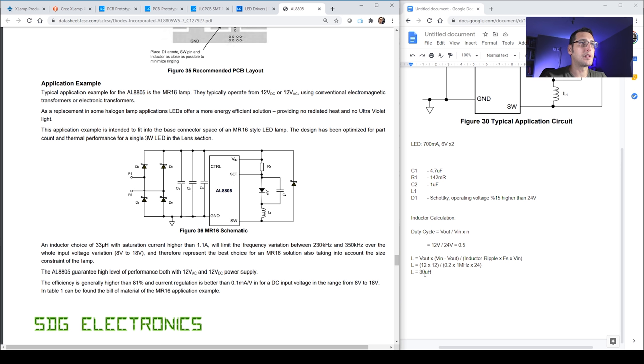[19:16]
And therefore, we can do some inductor calculations here using E equals L dI by dt. We've got our ripple current here, which is the dI by dt element, along with our switching frequency, and we know our input and output voltages. So we can see that if we only want a ripple of 200 milliamps in that inductor, our inductor value should be around 30 microhenries. So 33, again, actually is quite a reasonable estimate for the inductor that we can use in here.
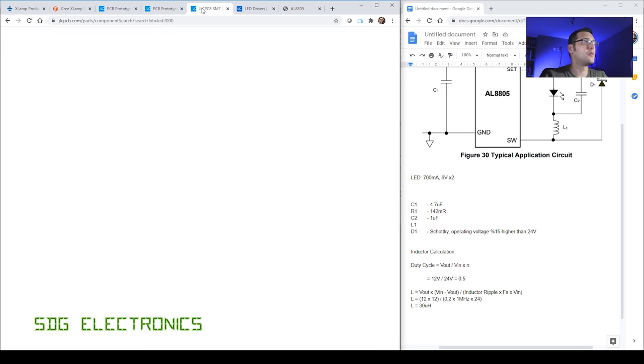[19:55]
If we start using lower inductor values, we'll see more ripple current. And if we use bigger ones, we will see less. And it did say that we could get away with having more ripple current in the inductor by compensating for that with this capacitor C2 in the circuit here. So we've got a little bit of headroom to play around with. From recollection, we do have some surface mount parts on JLC PCB's website. Let's have a little look and see what options we have. Do we have anything that's 33 microhenries?
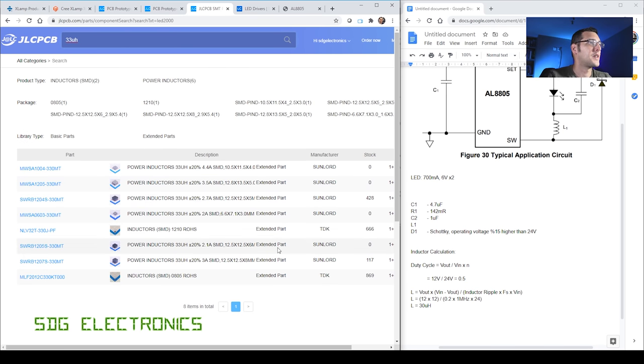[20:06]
We do, and we've got some power inductors here. In fact, we've got 428 in stock of that part. So we're probably not doing too bad. I think we may well go ahead with that choice.
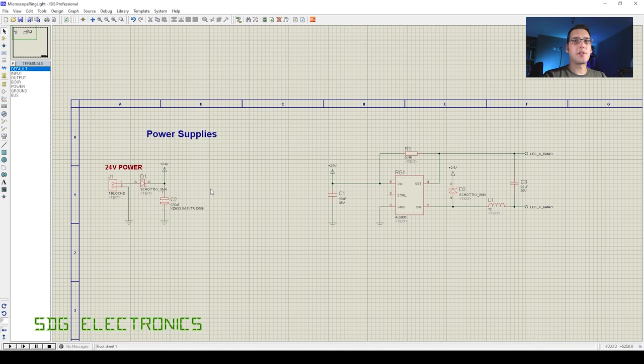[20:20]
So I've just started to draw out the schematic in Proteus. I'm trying to keep things as simple as possible in this design. We could over-engineer it to the nth degree. Let's try and keep it quite simple. So I've got our 24 volt input on the left-hand side with a Schottky diode for reverse polarity protection. And then that just goes straight into a relatively large bulk capacitor because this thing is going to be on the end of a relatively long piece of cable, and so we do want to have that reserve storage on the PCB.
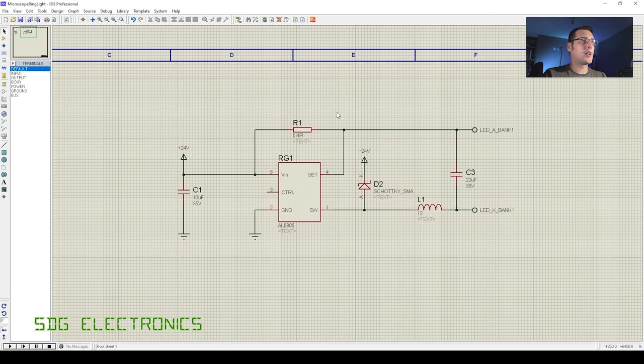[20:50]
Then with regards to the actual LED driver itself, here is our AL8805. And we've got a ceramic capacitor on the input pin as requested. We've got a current setting resistor, which is about 0.4 ohms for the types of current that we want to get out of these LEDs. We've got a Schottky diode, inductor, which I haven't put a value on just yet. And then we've got a ceramic capacitor across those LEDs to try and reduce the ripple currents.
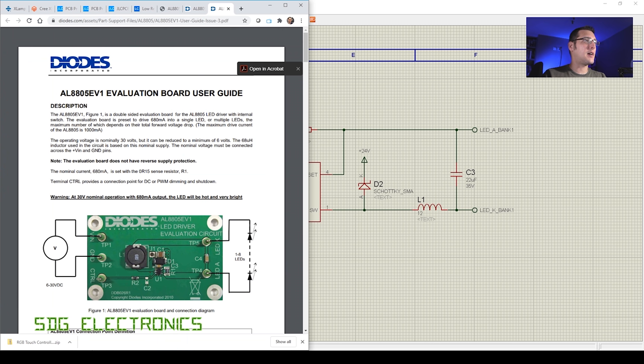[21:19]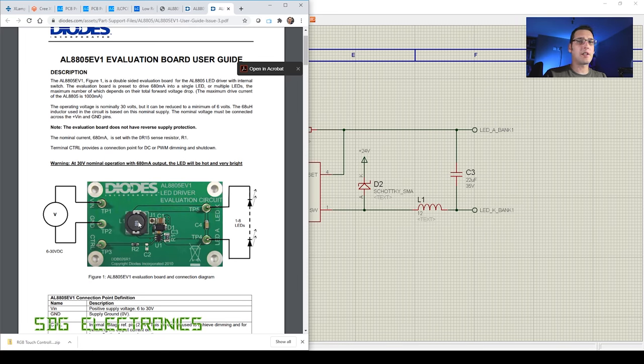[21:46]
Now, when I was having a little look around, I did find the user guide for one of the evaluation boards for this chip. So the actual specifications here are pretty similar to what we're trying to achieve in this design. So you can see supply voltage up to 30 volts with 680 milliamps output. We're aiming for 700, so this is pretty much on the mark. So we could probably almost lift this design almost exactly. You can see here they've used a 68 microhenry inductor. And if we can find one at JLC PCB in the size that we want, then obviously we can use that as well, and that will reduce the ripple current even further.
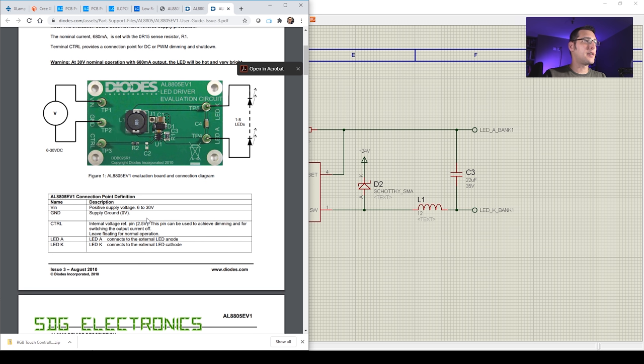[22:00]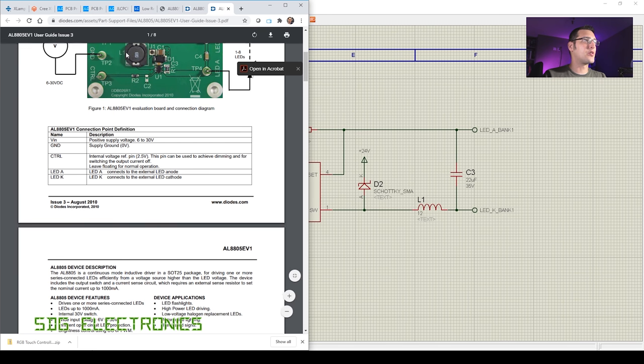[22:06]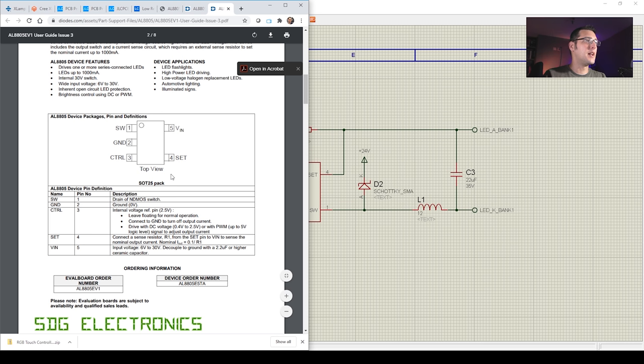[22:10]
Now, the nice thing about this is it's slightly better written than the datasheet, and it does actually indicate how to control the control pin for dimming the LEDs. And basically, you can control it with a PWM signal, as we know, but you can also just drive in a DC voltage into that control pin. And basically, it says here, drive with a DC voltage 0.4 volts to 2.5 volts, or with PWM up to 5 volt logic level to adjust the output current.
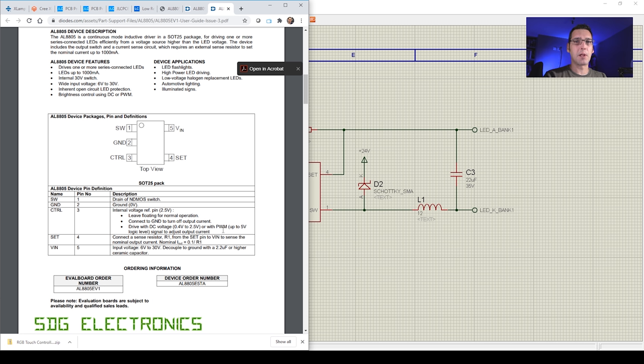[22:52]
And I really don't want to start having microcontrollers or anything like that on this design. So really, I think what we're going to end up doing is just having a lower voltage rail somewhere in this design and simply using a potentiometer, because the actual control that we need is probably going to be on a relatively high setting. But once we've set it up once, we're not really going to tweak it, so we don't need the complication of firmware or anything like that. So what we'll probably end up doing is dropping the supply voltage down to something more reasonable with a linear regulator, down to 5 volts or something like that, having a series resistor and then a potentiometer, and we may need to buffer the output from that potentiometer, and then we can simply just feed it into the control pin.
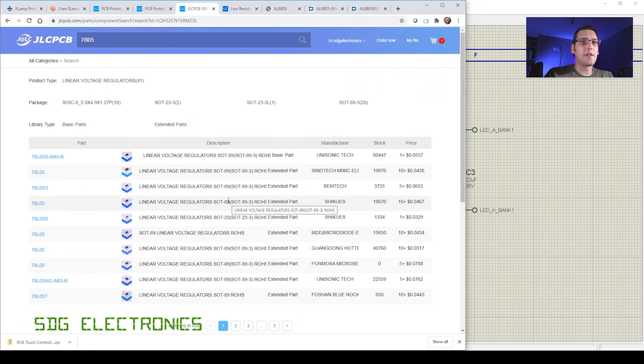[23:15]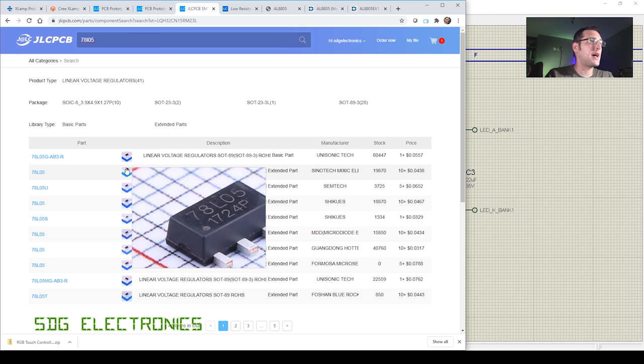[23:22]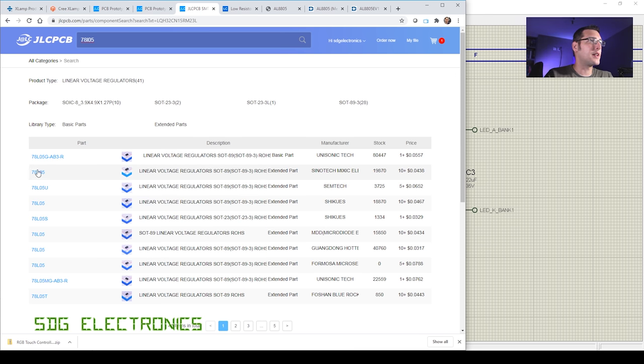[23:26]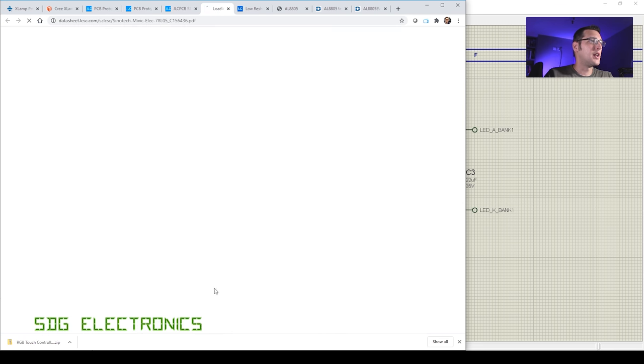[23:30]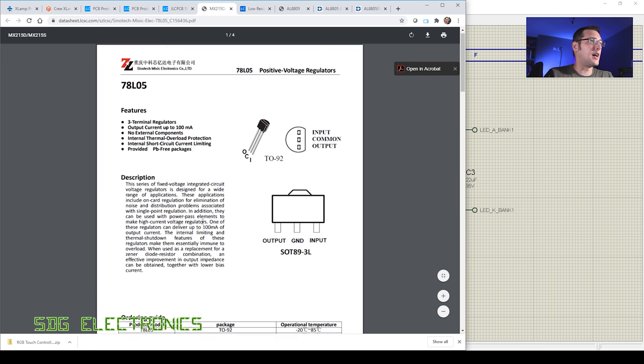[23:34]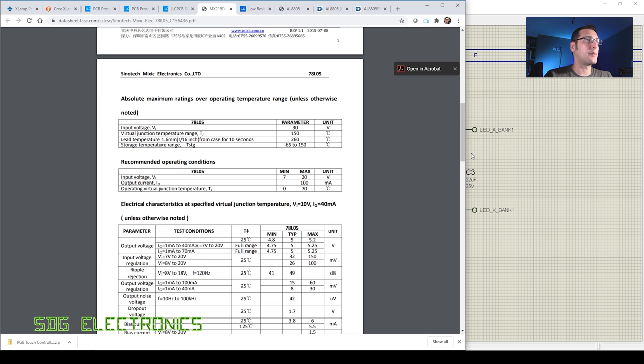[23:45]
So we've got plenty of small 5-volt regulators. These are 78L05s in a SOT-89, so quite a small compact package. We're hardly going to be dissipating any power here, so we can just pick any of these. We just need to check that the input voltage is within range. It should be for a 78L05. And we can see here, maximum input voltage 30 volts. So yes, we can actually use the 78L05. I'll just create the symbol and then add that into the schematic.
And so this is what I've come up with. Basically, we've got a 78L05 in quite a small package. We don't need to worry too much about the power dissipation from this, because although we are dropping from 24 volts down to 5 volts, we're actually only drawing about 1 milliamp peak from the 5 volt rail, so the power dissipation isn't very high. We've got about 250 microamps going through this resistor divider network, and what the datasheet says is that at 0.5 volts with analog control, we get about 25% brightness. Anywhere below that and the switch mode power supply actually switches off. So our minimum brightness with analog control is 25%.
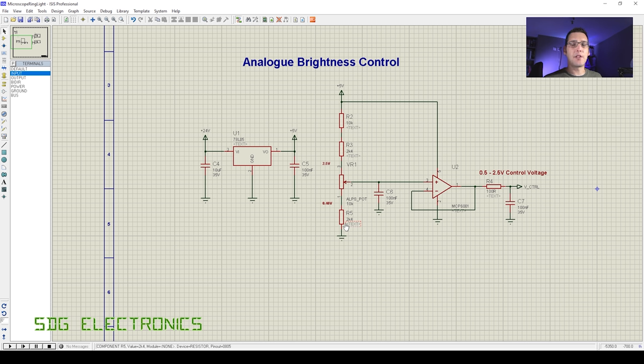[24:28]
And then when we feed in 2.5 volts into that control line, that is where we get our 100% brightness control. So we've got a resistor divider network here. And basically at this point here where the potentiometer is, we should have 2.5 volts based on the sum of all these resistors together. And on the ground side, by adding in another resistor to lift that side of the potentiometer up, we're at about 0.48 volts.
So what that means is that when the potentiometer is at the very lowest range, we may just see that the LEDs turn off and then jump up to 25% as soon as we start turning it up. Now that's feeding into a unity gain buffer, and we're just using a Microchip
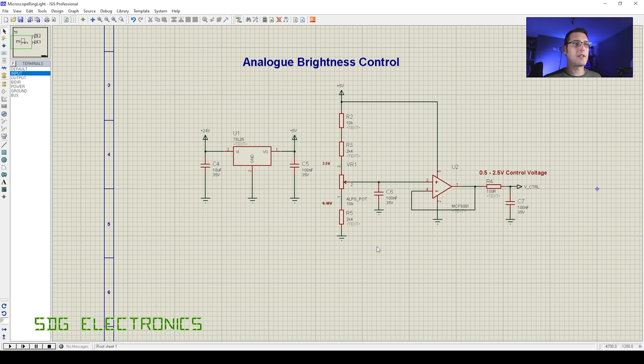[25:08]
MCP6001. These are really nice little op amps, rail-to-rail input and output, very low quiescent current, and I've used these a lot. They're really nice low-cost devices and perfectly within our supply voltage range. And then we've just got a small filter on the output.
Now the reason that I've done that, originally I was just going to put a series resistor just because I wanted to isolate the output of the op amp from the input to the LED drivers, because this op amp can have trouble driving capacitive loads, and the datasheet doesn't go into enough detail about that control voltage input pin as to what the load looks like.
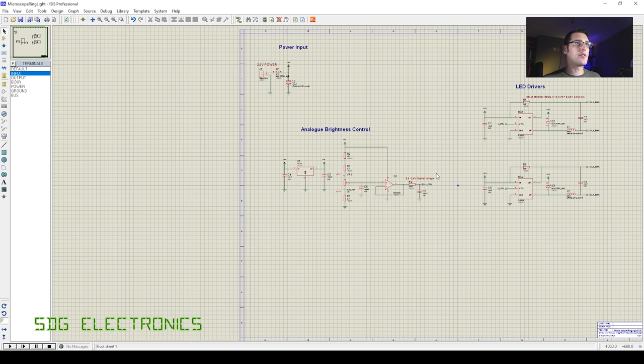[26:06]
So by isolating it with a series resistor, we also get the effect of protecting the performance of this op amp. Now, what I've done here is just put in a small filter. We don't have to fit C7, but it might just smooth things out and make the output voltage a bit smoother. So that's the analog brightness control.
And then we've got the two LED drivers. So these are two copies of each other, exactly the same as what we looked at a moment ago. And then we've just got this V control signal going into the control pins on both.
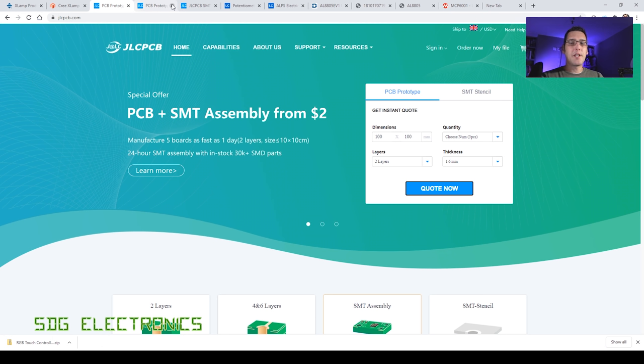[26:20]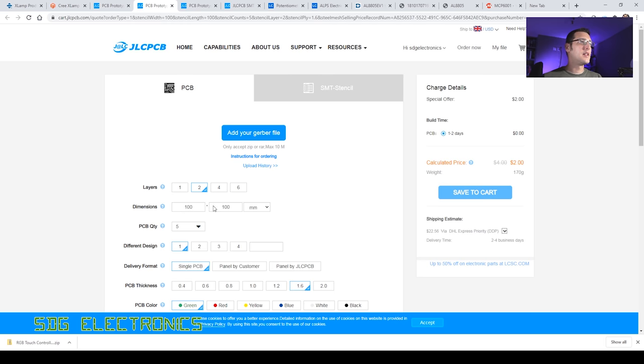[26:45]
Now, because we're using the PCB assembly service for the power board, that is restricted to a green PCB with 1.6 millimeter thickness. So we'll probably get that as the main PCB that sits around the microscope lens. And then on each corner, we'll have a satellite PCB with the LED, the optics, and the heatsink on it. And that will just be a standard PCB. We can easily just reflow the LEDs from that.
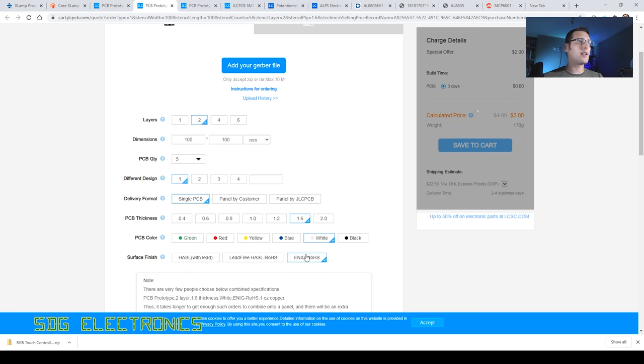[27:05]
And one thing that I have noticed in the past is when you have LEDs with the optics mounted on it, sometimes you do get some colour transfer from the PCB colour silkscreen that you've got on there. So we do want to pick a white silkscreen, and we do also want to panelize the actual PCB, because although our 25 by 25 millimeters, which is probably the size of the PCBs that we're going to use for the LEDs, you can see even there it's still going to cost $51 just for the five boards.
So if we go back to our 100 by 100 millimeters and panelize it, you can see that the cost increase is not that much more. We'll get 16 boards per panel, and therefore we'll actually have tons and tons of LED boards, and we can use those for other things in the future.
The other thing that we might want to think about is the PCB thickness, and the standard obviously is 1.6 millimeters. Our PCB itself is going to be the LED, PCB, and then a heatsink on the other side with thermal vias going between it. But the thinner that PCB, the less thermal resistance there is between one side and the other. So with 1.6, you can see it's about $57.
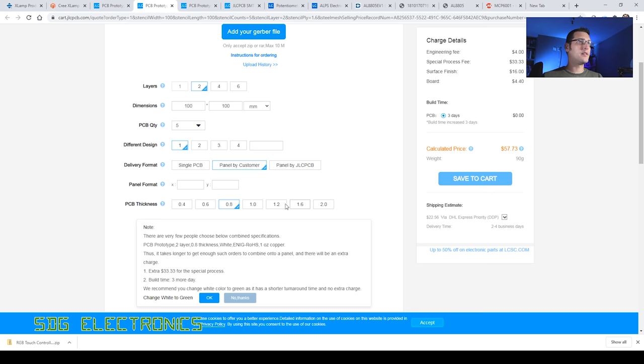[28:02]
If we drop down to 0.8, still the same. 0.6 millimeters, still $57. But then when we drop down to 0.4, if we go back to white, you can see that's quite considerably more expensive. So I think the 0.6 millimeters is probably a happy medium that should give us reasonable value for money for
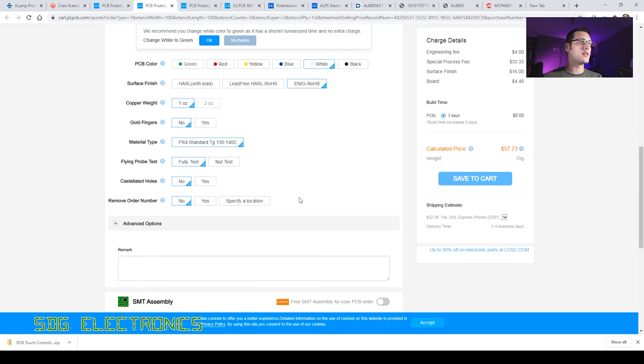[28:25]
those PCBs. There's nothing else that we need to choose on here, and then I just need to get those boards made. So we'll do a follow-up in a few days when I've started the PCB layout, and we can work through that and see some of the considerations, thermal considerations, and also the considerations around the DC to DC converters, and we can run that through and actually get the PCB ready to send out to JLCPCB.
Hopefully you found the design process interesting. It's a relatively simple design, but I know a few of you have asked if we can do a step-by-step on how to select some of the components and some of the design process early on. So hopefully this has been useful and interesting, especially to those that are just starting out with designing their own PCBs and schematics.
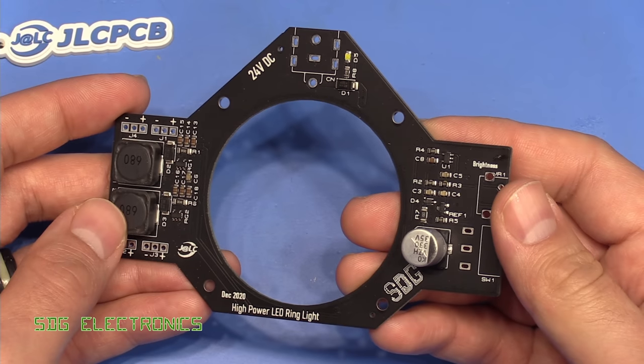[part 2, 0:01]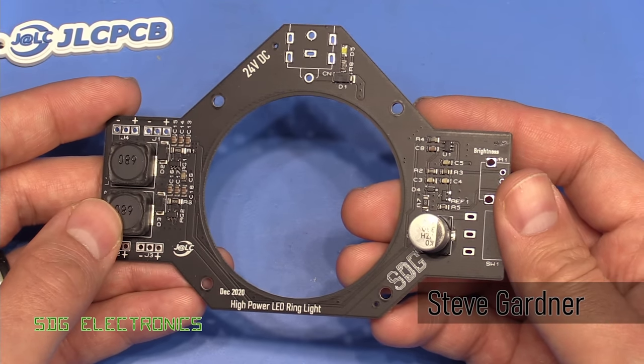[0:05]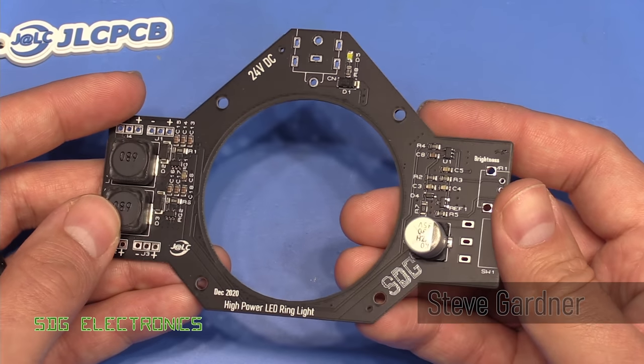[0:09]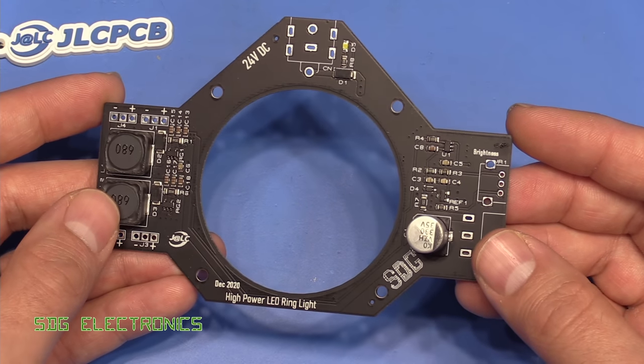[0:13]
Hi, today we're going to try and finish the LED ring light project. As you can see, we've got a brand new PCB here assembled at JLCPCB using their updated service that now allows you to have black two-layer PCBs assembled. So I think that looks really nice.
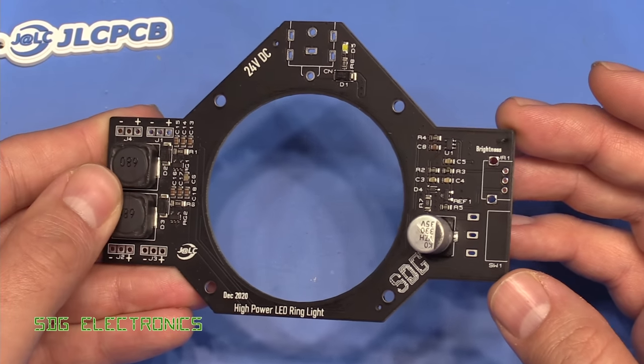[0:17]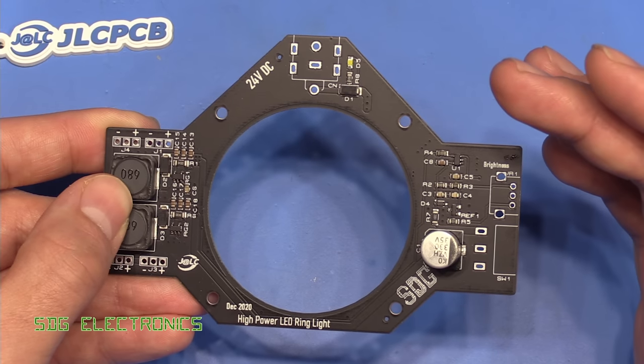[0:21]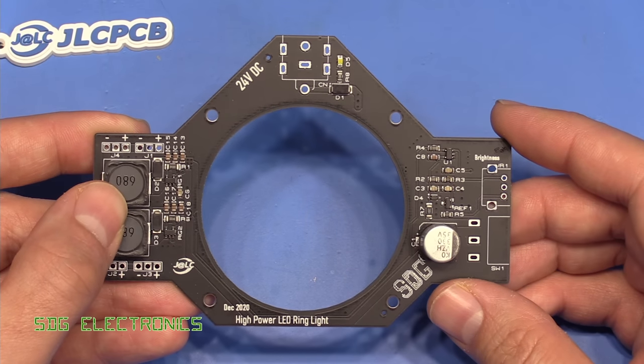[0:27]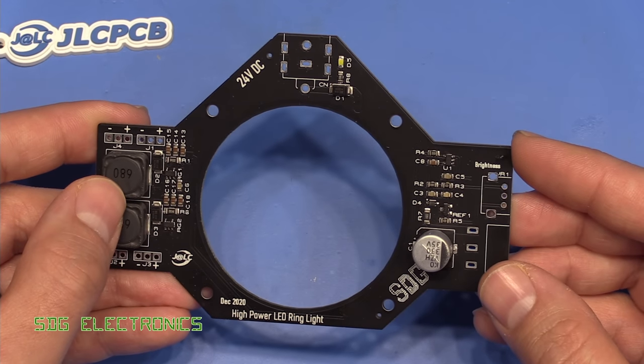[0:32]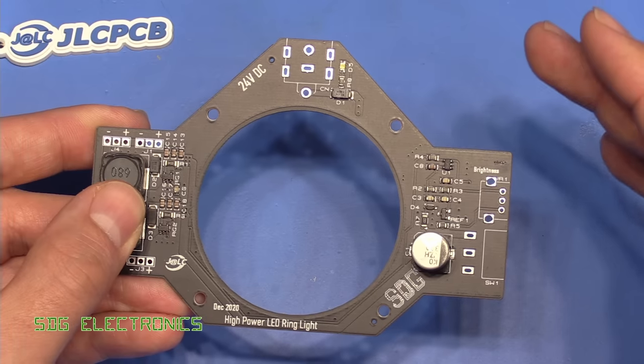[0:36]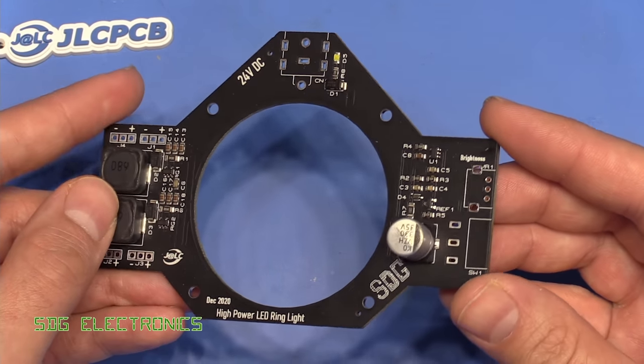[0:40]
And as you can see, it's a lot more compact than the original design, because the main problem that I was having is that the original PCB was just too big and it was causing some interference, particularly around where the LEDs were mounted. And so I couldn't really come up with a decent 3D printed solution that wasn't quite bulky and huge underneath the microscope. So this is the new design.
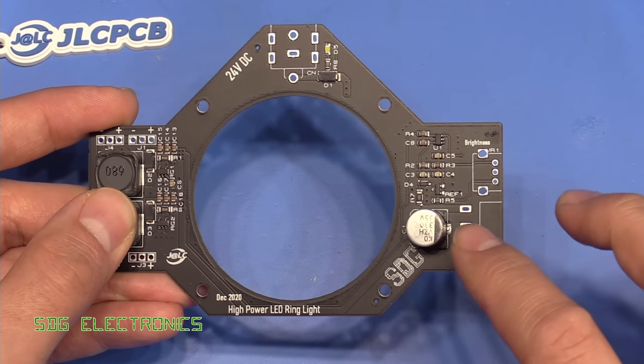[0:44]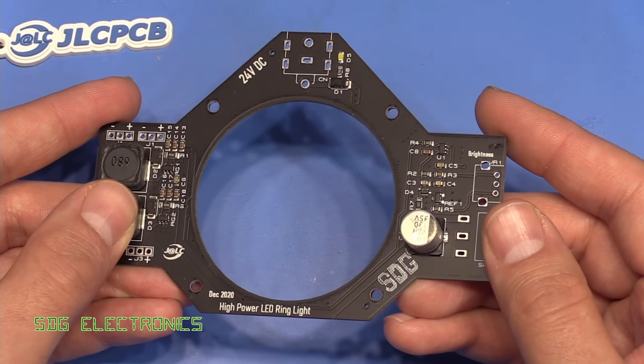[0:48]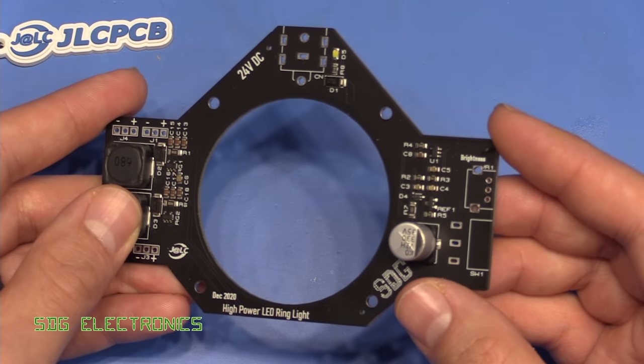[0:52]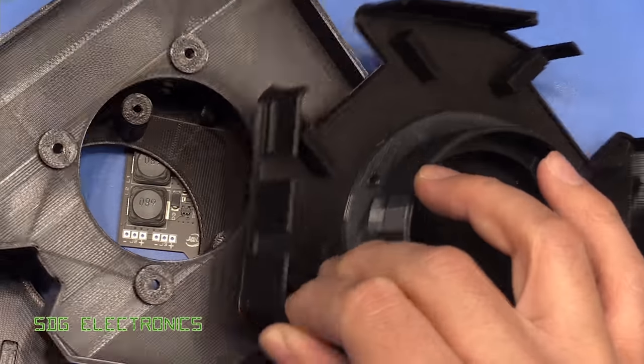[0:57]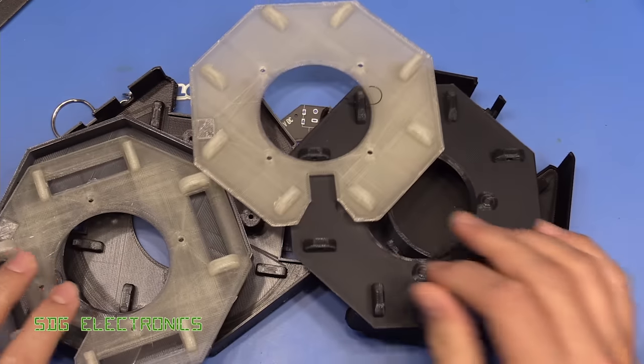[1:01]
It's pretty much the same electrically speaking. I've changed just a couple of bits and also changed the LED driver chip. So we'll look at the schematic in a moment. But really what's taken all the time is the mechanical design. So since the previous video, I've been printing all these different 3D printed designs. As you can see, we've got all different kinds of things here, and it just wasn't really working.
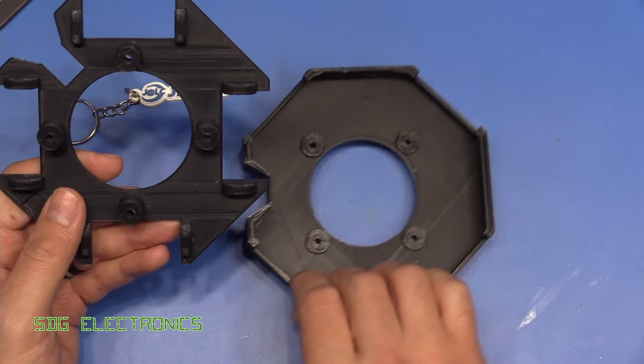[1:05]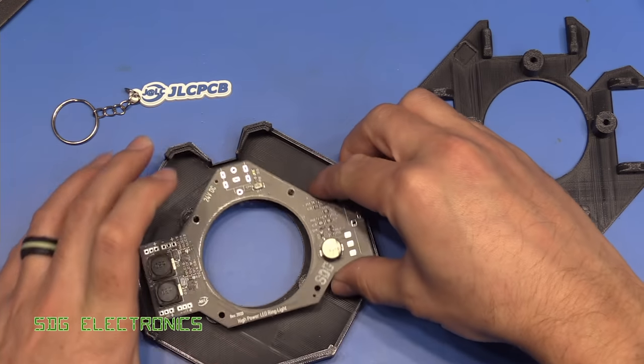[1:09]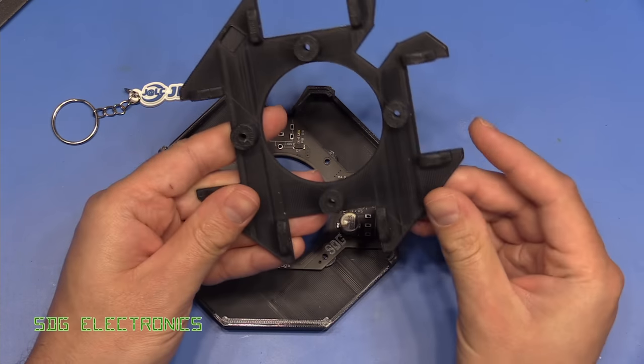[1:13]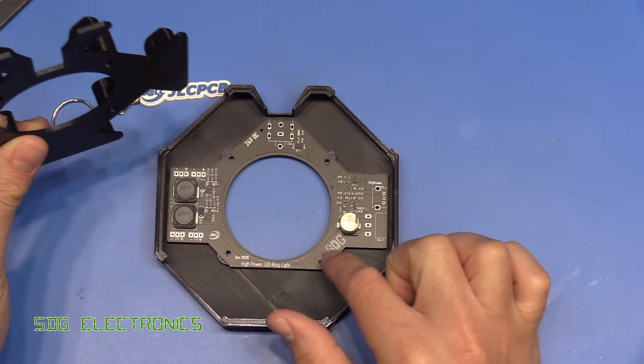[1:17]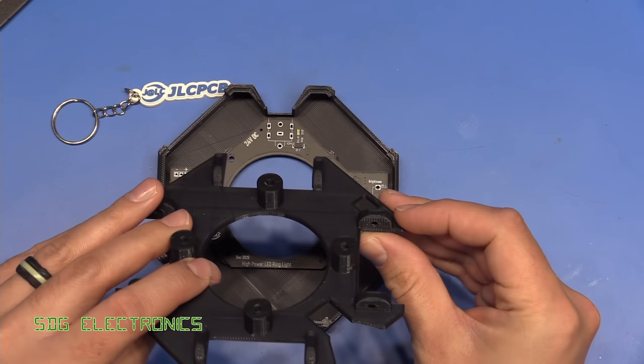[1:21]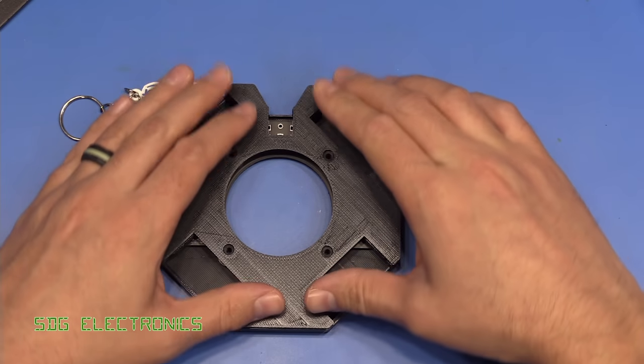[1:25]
So what I've ended up with is this much simpler design. The PCB itself sits in the cover like this, and then we've got the top piece, which goes onto the PCB. There's some bosses here which go through onto the PCB with screw holes, and so this top cover just sort of clicks in place, and that is held all together quite nicely.
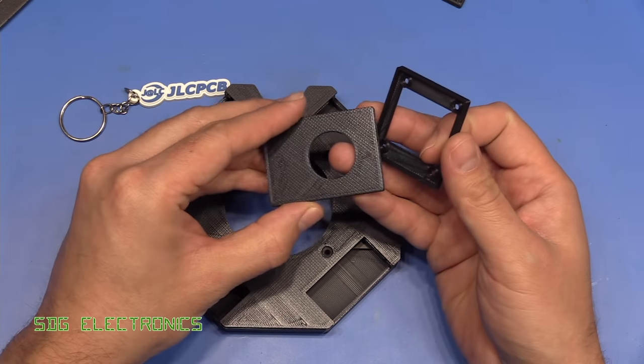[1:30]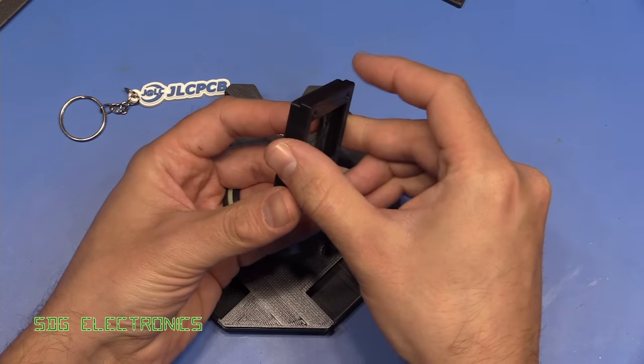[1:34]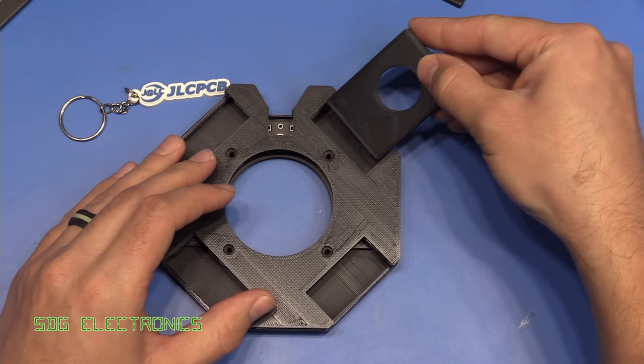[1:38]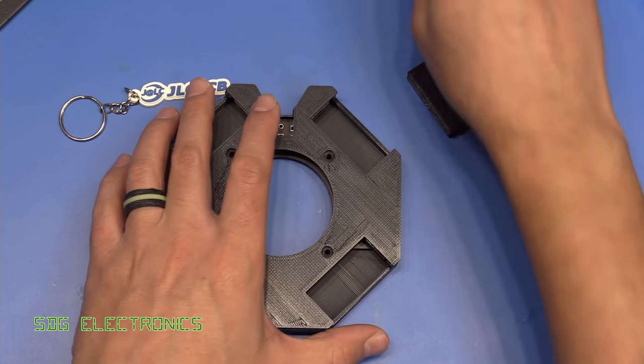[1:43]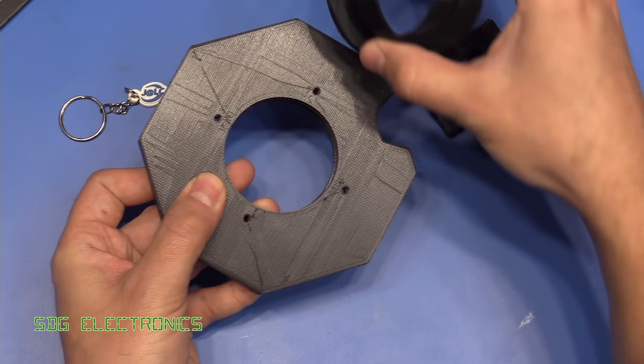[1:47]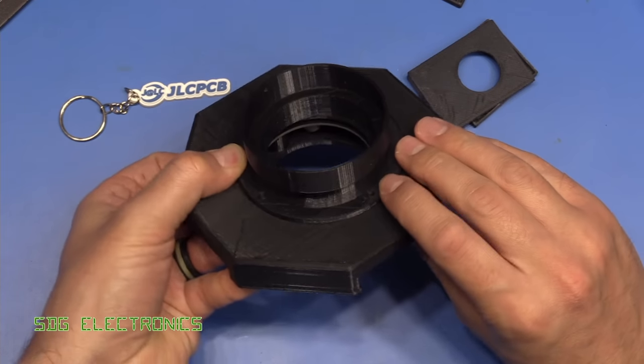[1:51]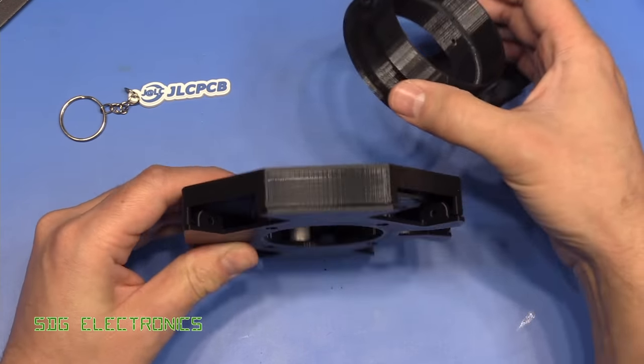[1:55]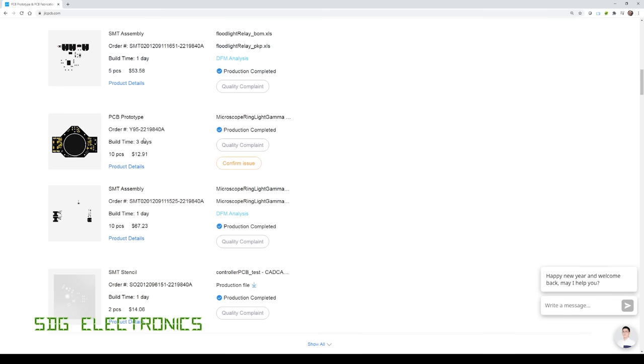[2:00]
Then we've got the LED mount, so the PCB sits in here, the heatsink sticks out the back. We've got a little hole here for the wires to come out, and those go into the plastics like this. And then to mount it to the microscope, the same four screws that go through here come through the other side and then through onto the microscope mount. And then this whole thing pushes onto the microscope, and then there's some grub screws which hold it all in place.
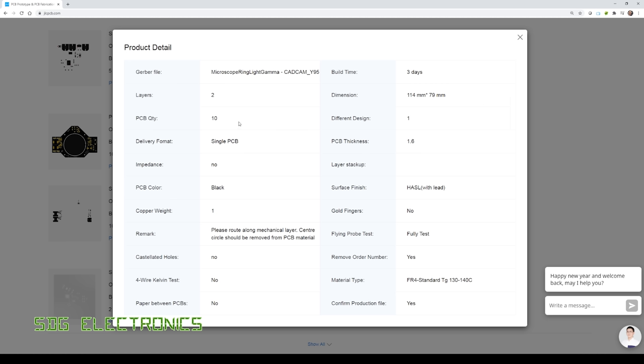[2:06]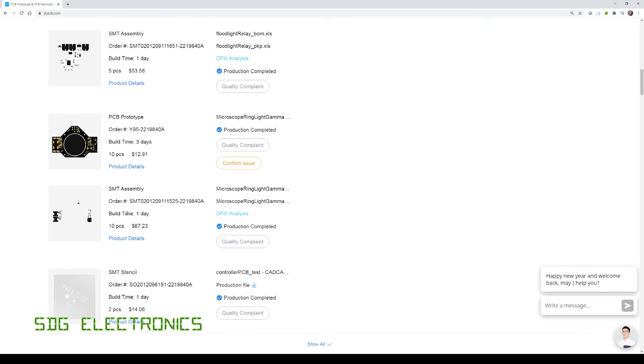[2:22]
So here is the order at JLCPCB. The PCBs themselves were only $12.91 for the 10 PCBs. And the only options that we selected other than the standard stuff is a black PCB. We've got the standard hot air solder leveled finish. And then I also got them to remove the order number and also confirm the production file so I could check that they were going to cut that center section out from the board. And then the assembly was $67.23, including components for the 10 boards. So that total is about $80 for 10 boards, or about $8 per PCB, which I don't think is too bad at all.
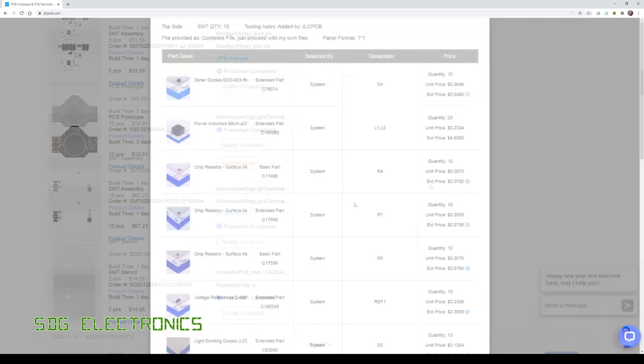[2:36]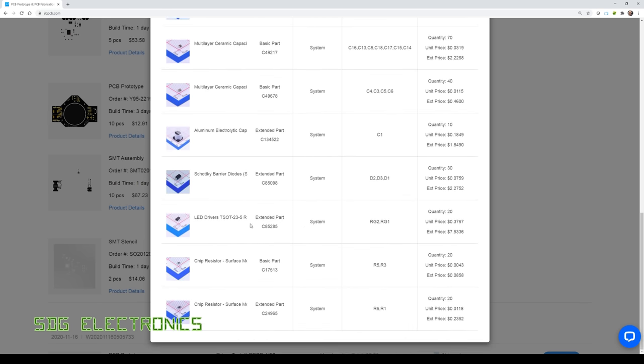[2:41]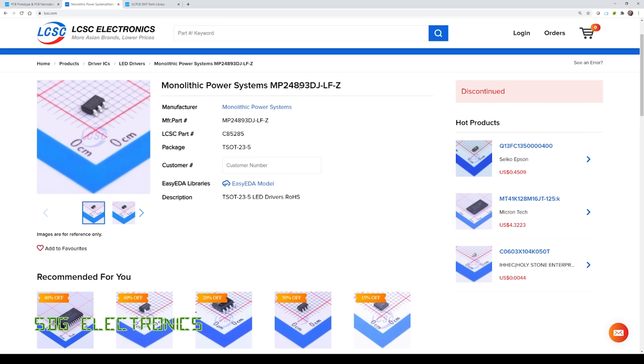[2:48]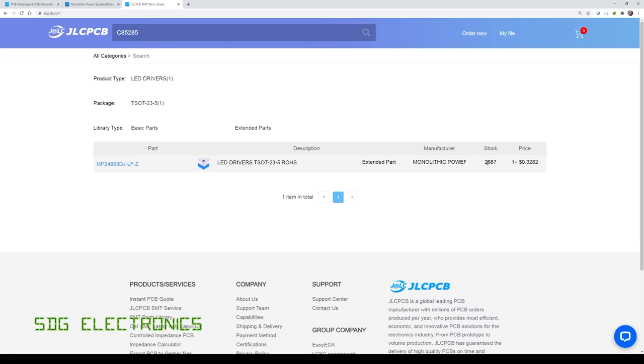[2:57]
Now, the only thing that I've changed on the schematic is the driver chip, which is this part here. Let's look that up on LCSC. So it's the MP24893, which is very similar to the driver that I ordered from DigiKey when I was having all the troubles before. It's actually discontinued at LCSC, but JLCPCB have still got stock of about 2,500 of them. So I was able to use that part, and we know that we had decent results with a very similar part from the same manufacturer previously. So hopefully everything should just work nicely.
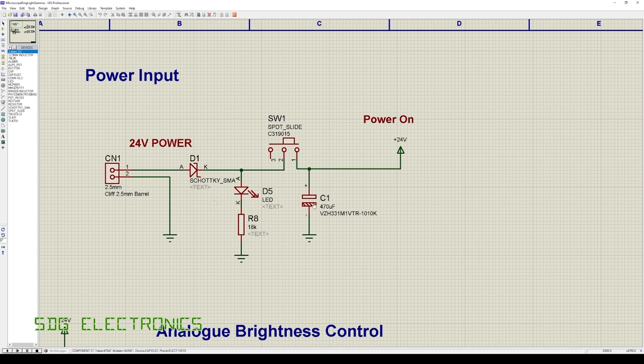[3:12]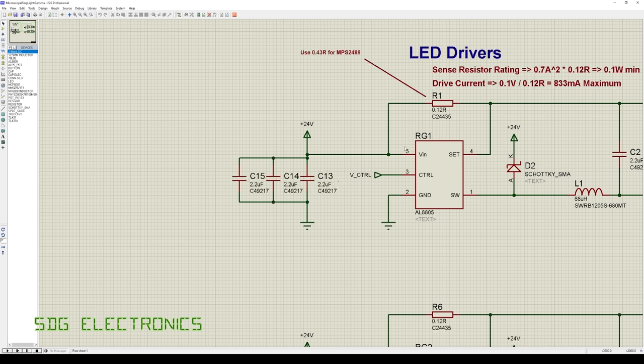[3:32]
The only other thing I changed is the location of this electrolytic capacitor. Previously it was on the supply side. I've moved it to the switched side now. That does mean that this switch is going to see quite a high peak current when you first turn it on to charge up this capacitor, but it should mean that the voltage rail slews up a little bit slower and reduces the chances of any spikes on VIN as a result of also having these very low impedance ceramic capacitors on that line.
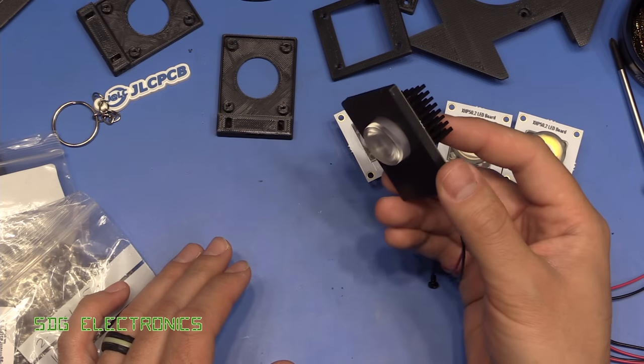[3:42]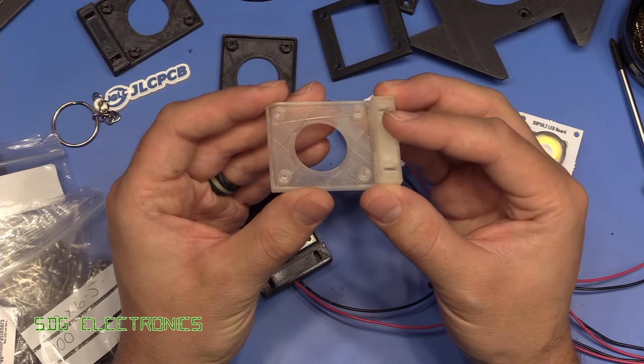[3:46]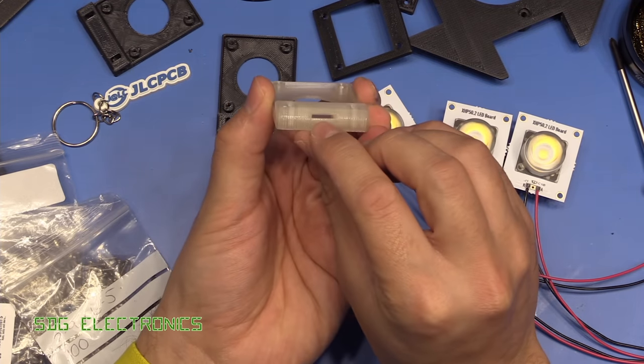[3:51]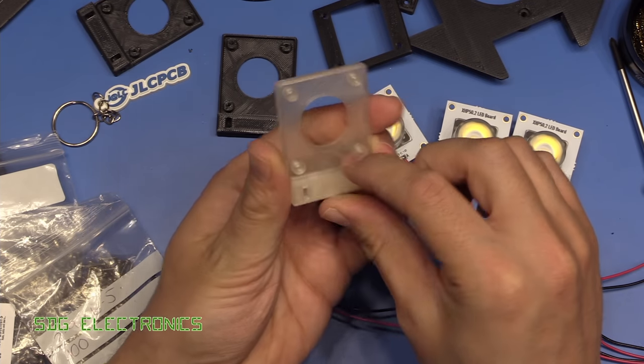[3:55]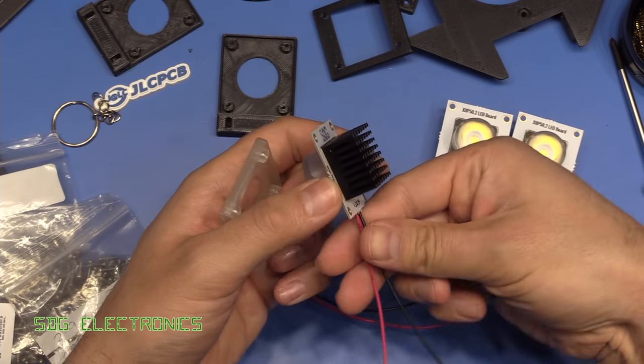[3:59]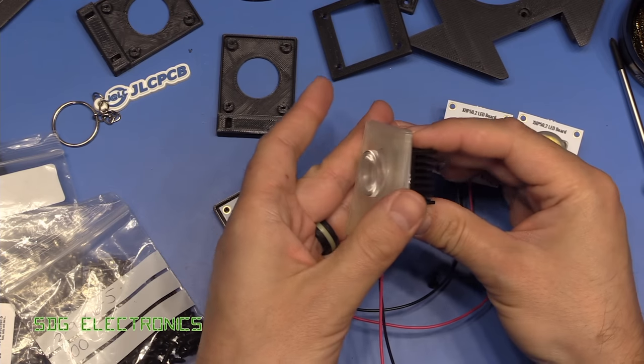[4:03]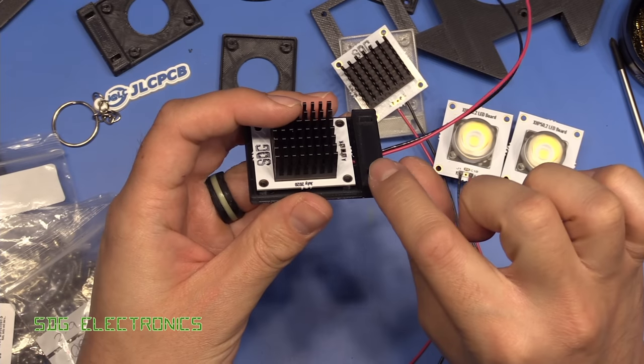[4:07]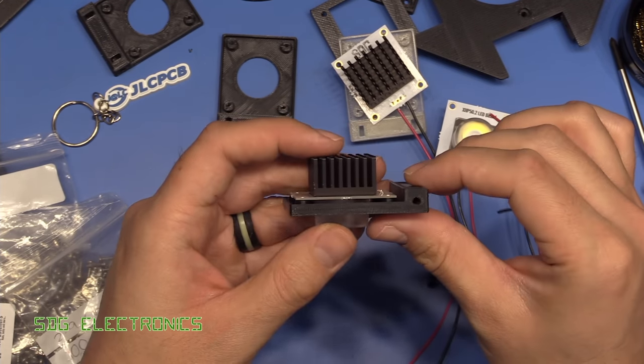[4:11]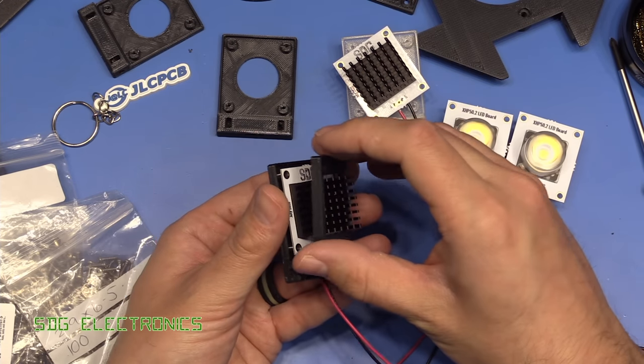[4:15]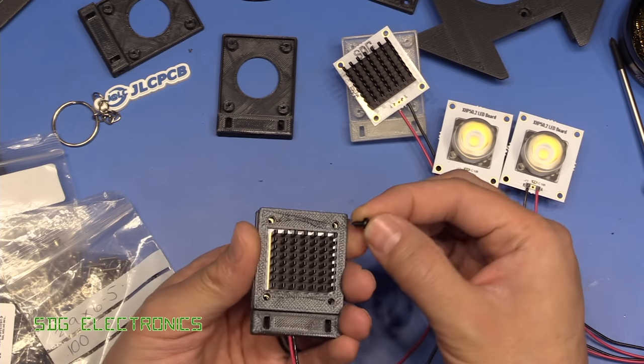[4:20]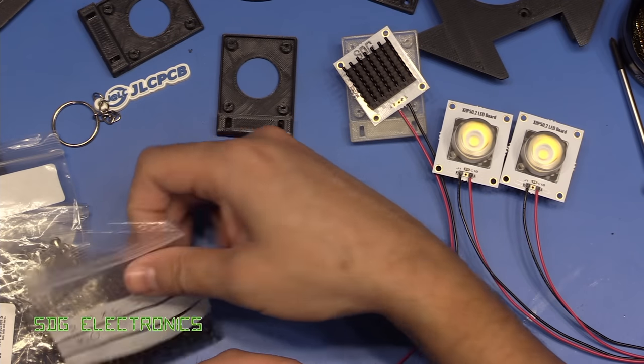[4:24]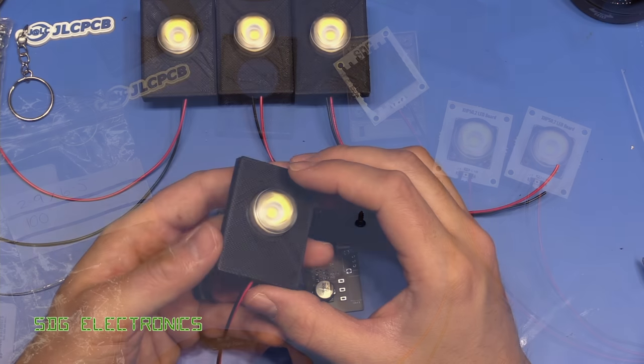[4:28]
So the way these little LED assemblies work is in the LED holder, we've got the hole obviously for the lens. Then there's this little slot which you can just about see going all the way through to the bottom edge here. So with the wire soldered onto the LED side, you poke the wires through the hole, then push the lens through the hole here, and you can see how it's been done on this one here. So we've got the wires coming through up underneath the PCB and soldered through on that side. And then you put the little cover on here over the heatsink, and that holds everything together. And then there's a self-tapping screw, one in each corner, that goes through into the 3D printed material. The size there is 2.9 by 6.5 millimeters.
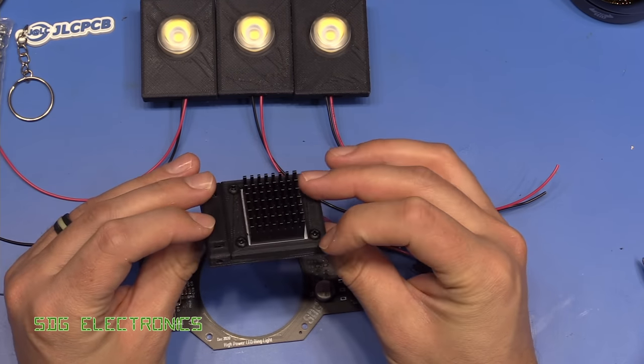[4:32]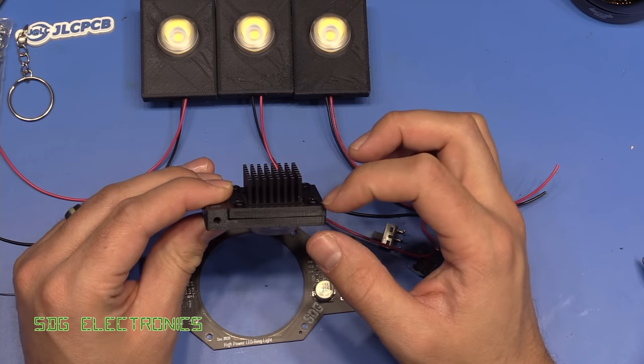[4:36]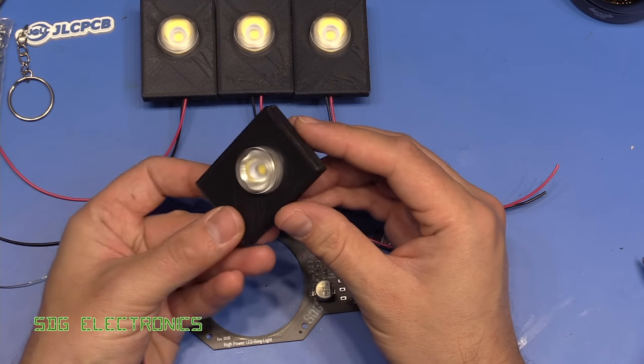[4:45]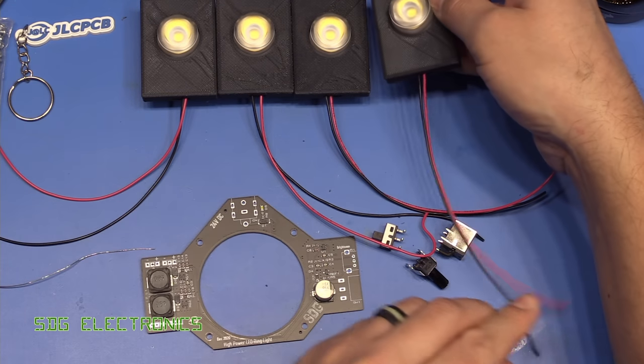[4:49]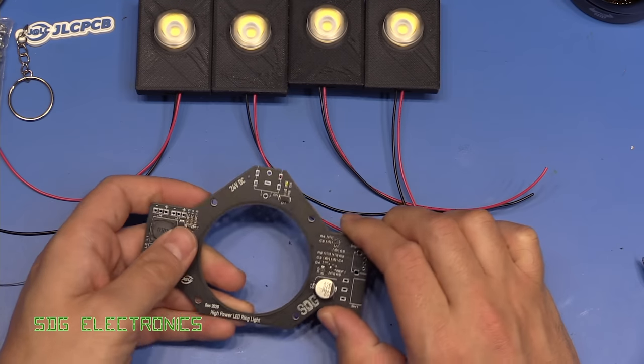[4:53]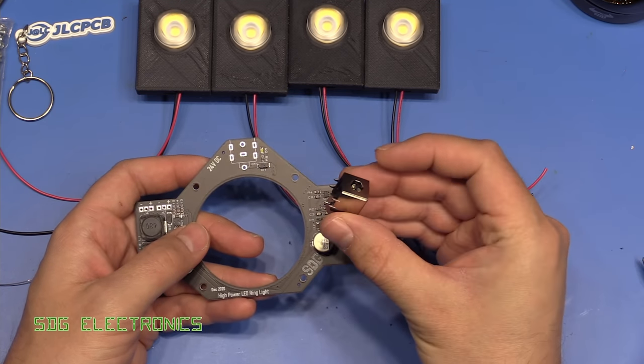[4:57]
So that's the LEDs fitted into the LED mounts with the four self-tapping screws. And I printed this in such a way that the holes that we've got are the perfect size for these self-tapping screws. So it's not like we're cutting away material unnecessarily. These screw in quite nicely. So that's four of those done. Those need to be routed within the chassis once we get there. The next part is to put in the through-hole parts that JLCPCB couldn't assemble onto the board. So we've got the DC jack from Cliff Components.
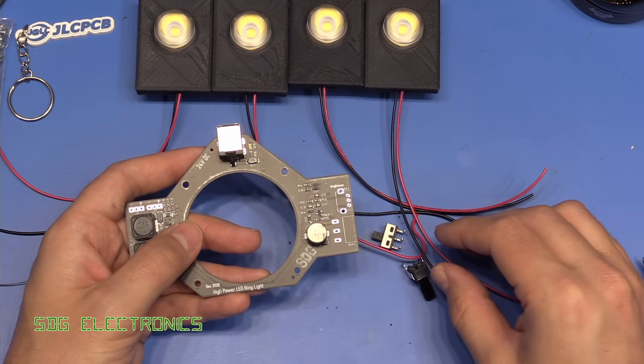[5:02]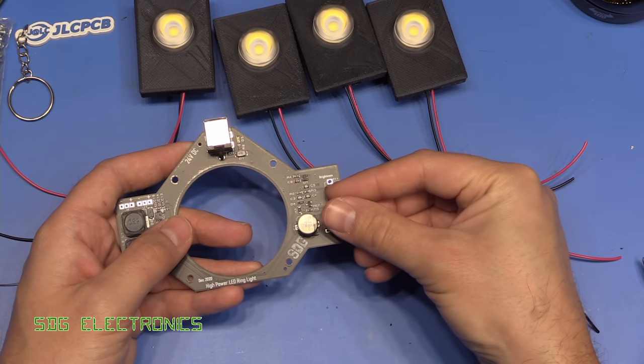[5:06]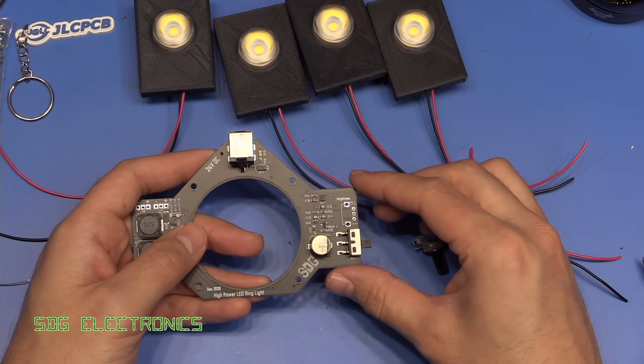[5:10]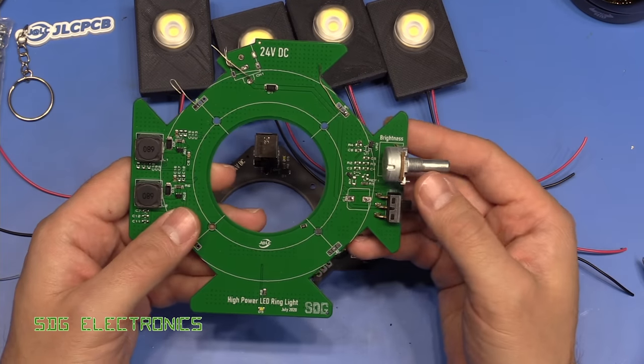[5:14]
That fits in nicely. We've got the slide switch as well. And again, that's the same as before, so no problem there. Now, I did end up changing the potentiometer. Here we've got the old board, the one that I disassembled slightly in an earlier video.
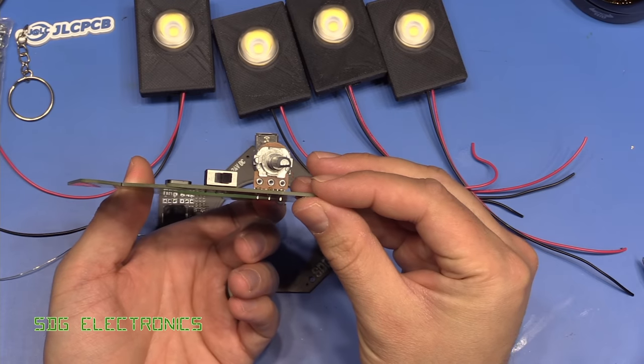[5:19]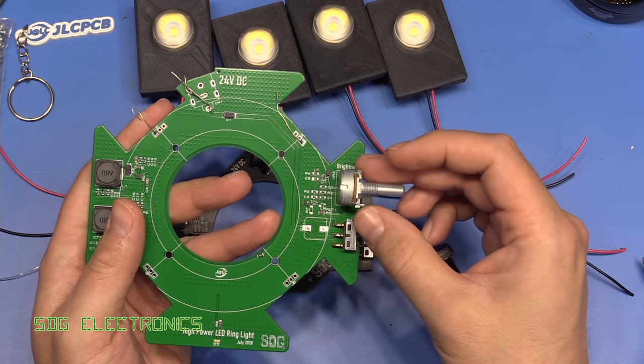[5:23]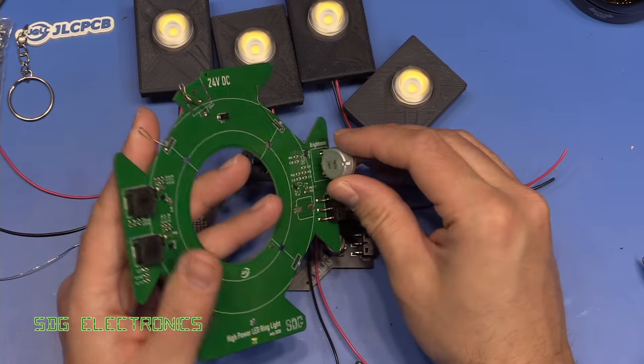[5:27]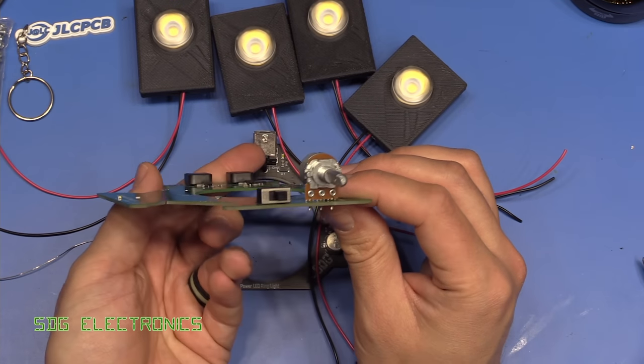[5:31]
So this ended up being quite a bulky potentiometer, and it kept getting in the way of all of the mounts for holding these in place. I just kept finding it was getting in the way. It also added quite a lot of height to the PCB. It was the tallest component by a long way.
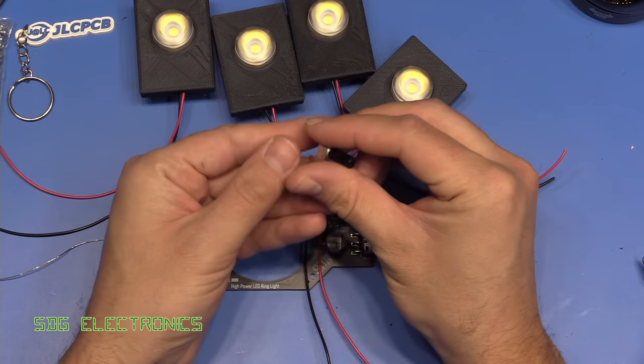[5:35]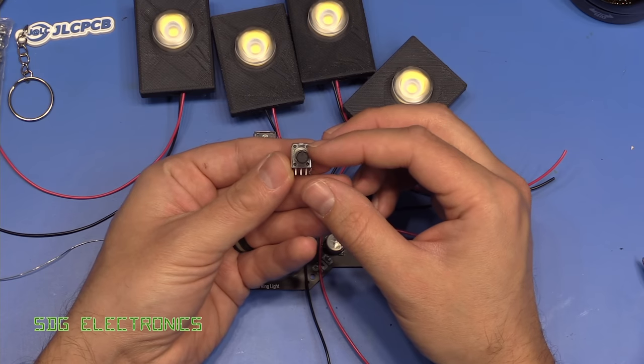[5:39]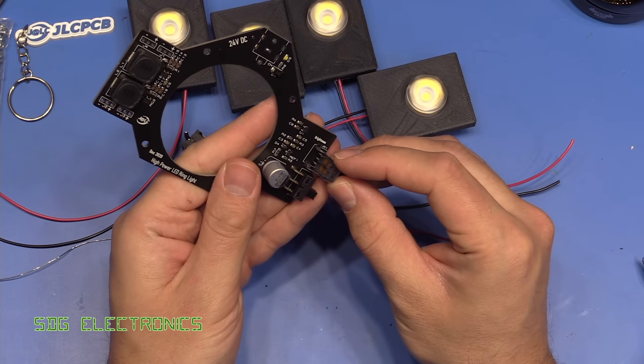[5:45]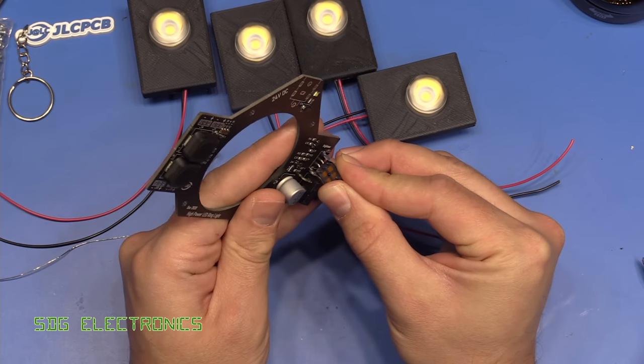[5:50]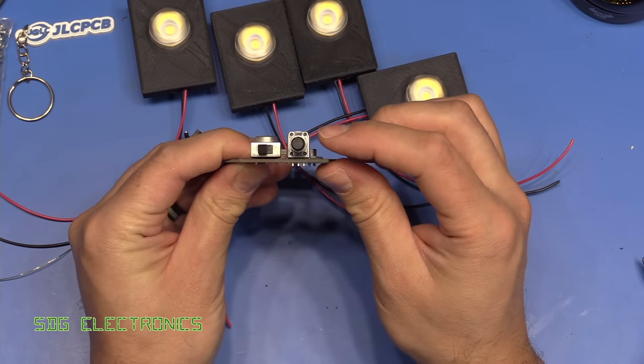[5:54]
So this one is actually the other part that I had in the original video. I selected two potentiometers but only placed one. Hopefully this should sit in there nicely, quite satisfyingly. It should click as well because of the way it's designed. And there we go, it's in there nicely. And as you can see, it's not much higher than that electrolytic capacitor.
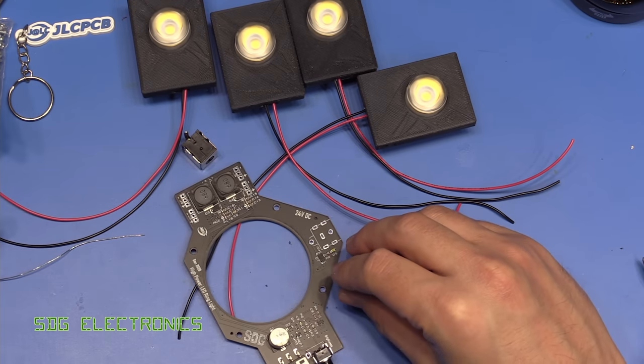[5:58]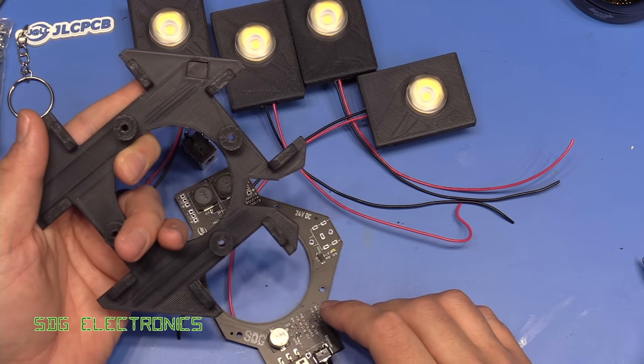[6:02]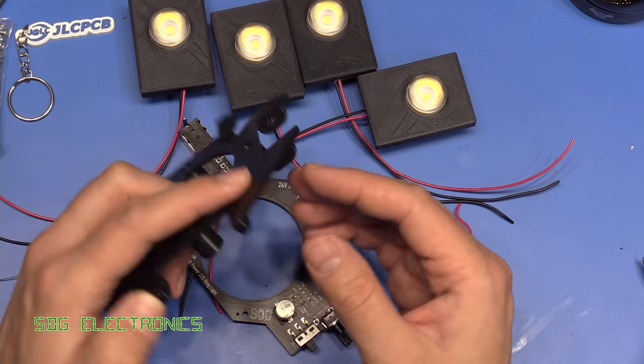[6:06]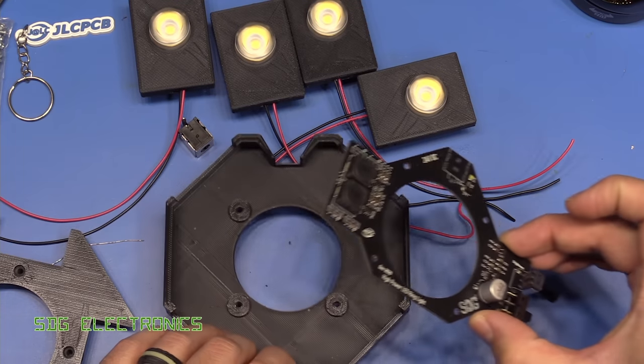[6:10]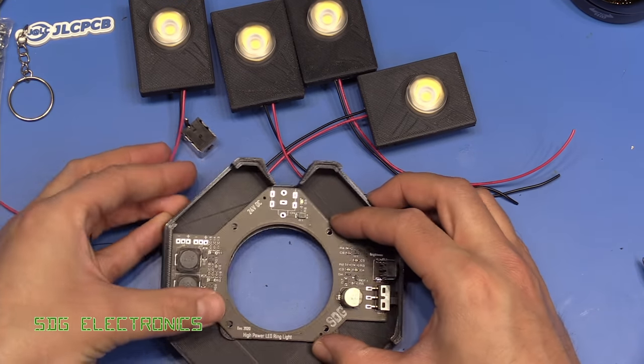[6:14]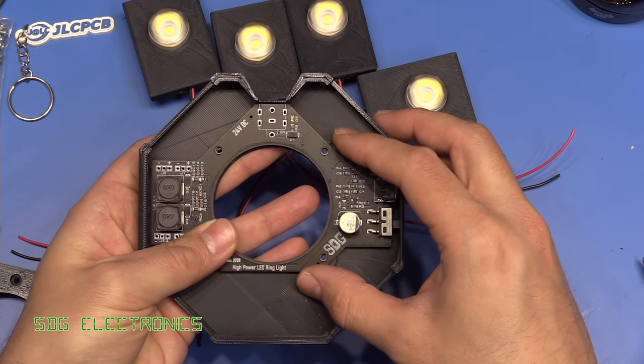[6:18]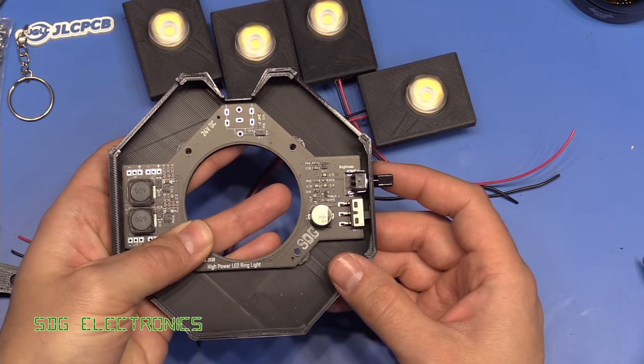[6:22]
I did end up having to thin a bit of area here to sit above that potentiometer, but it doesn't really cause any problem, obviously, with the rigidity of this. And then this should slide through the mounting hole, and should still be able to line up with the four screw holes, which it seems to nicely. So that seems to work well. So I'm just going to solder those parts up now.
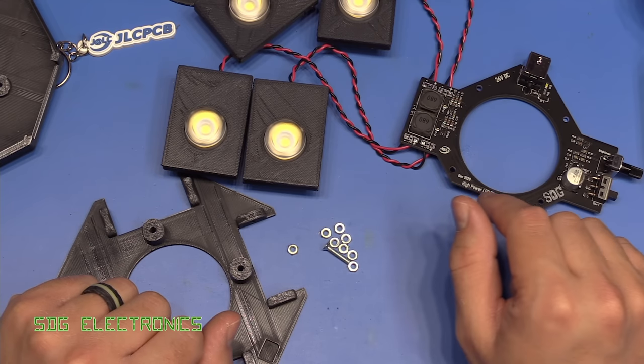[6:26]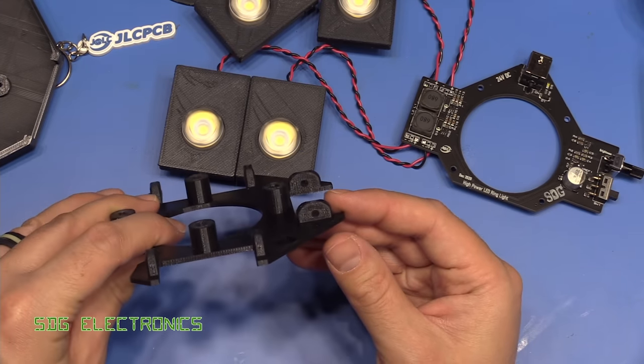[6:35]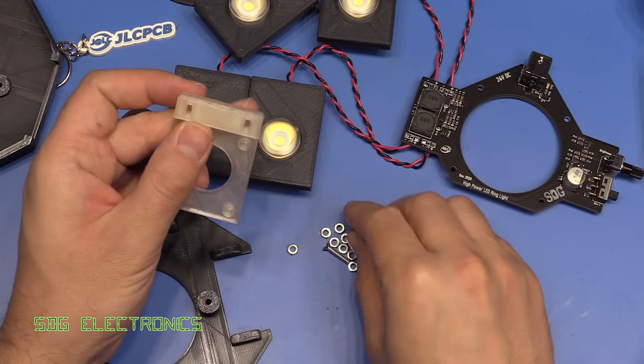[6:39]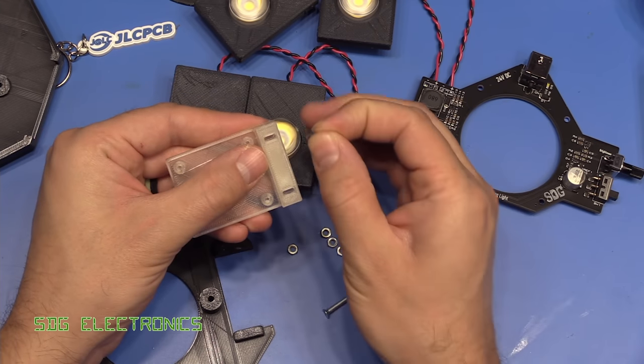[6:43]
Right, so that's all of those components soldered on. I also soldered on the wires for the LEDs. The next part is to mount the LED holders onto the top cover. Now, the way that I've designed these little LED holders is there's a little slot at each side, and that is designed to take an M3 nut. So you push it in, it takes a little bit of force, so it stays in there quite nicely, but you can see it fits in there.
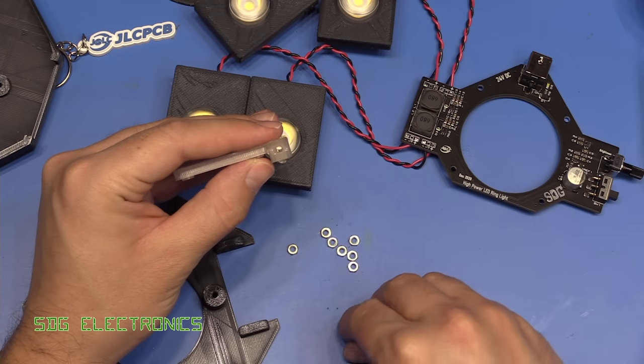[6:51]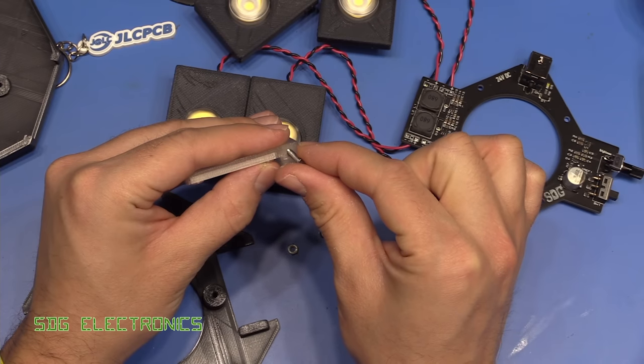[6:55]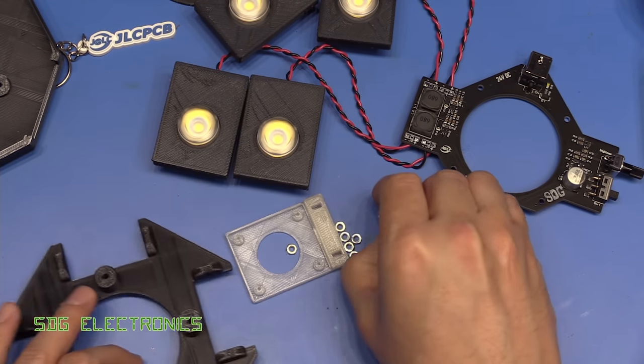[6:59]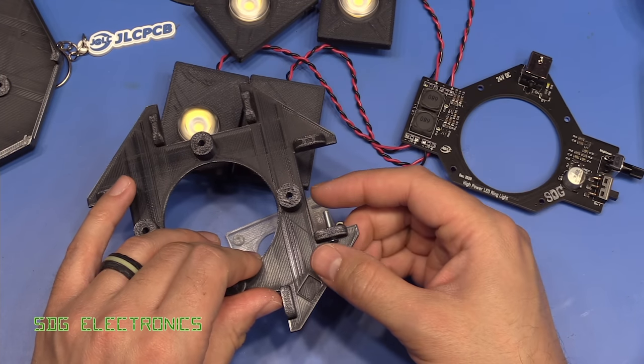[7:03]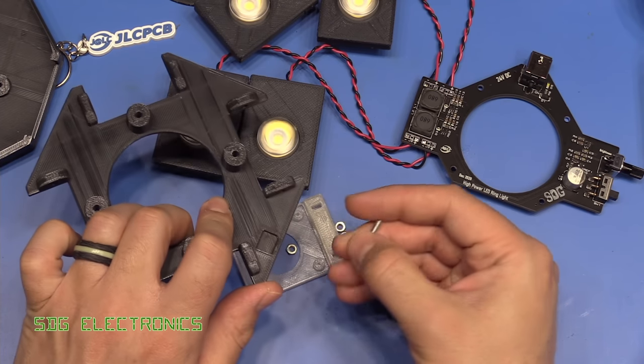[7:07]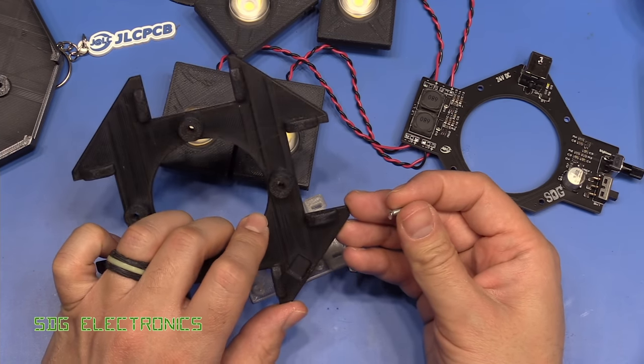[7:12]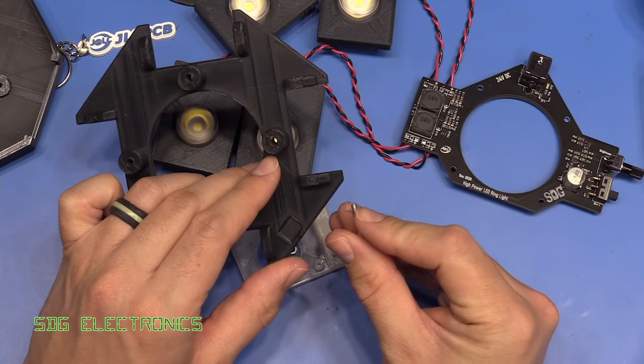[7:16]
Push it in, and then when you put your screw in from the side, the nut is automatically held for you. So you just push that in, start screwing it in, and it holds it in place. And these screws are going to go through here into the LED holder. Now, annoyingly, I can't find my pan head screws, so we're going to have to use these countersink screws instead. I might swap them out when I do come across them, but I had a lab tidy the other day and that was a mistake. Anyway, let's try and get all of these onto here as well.
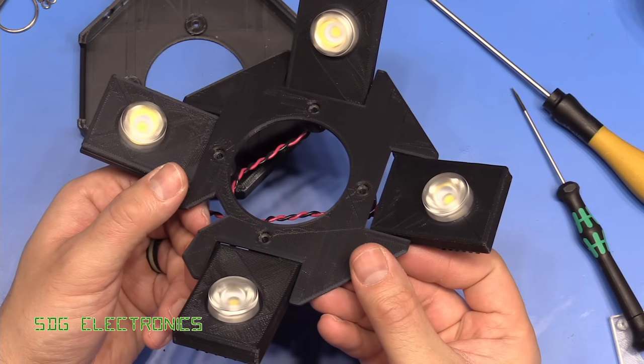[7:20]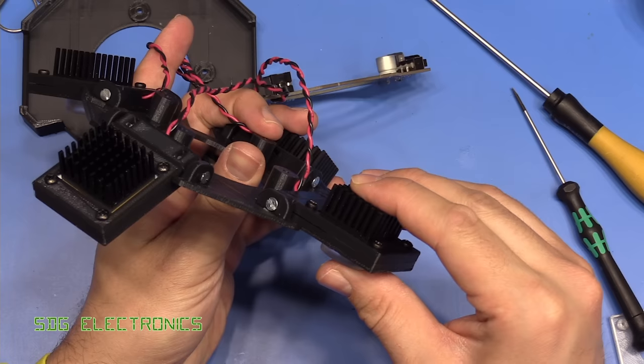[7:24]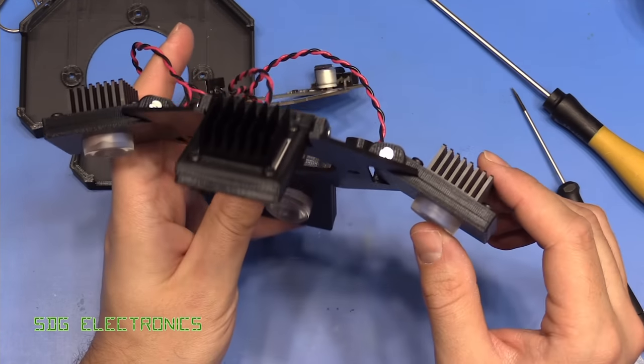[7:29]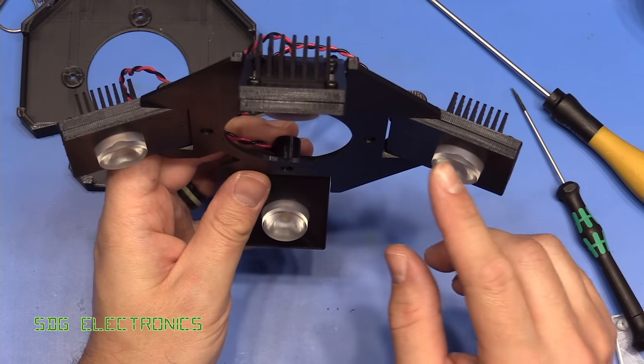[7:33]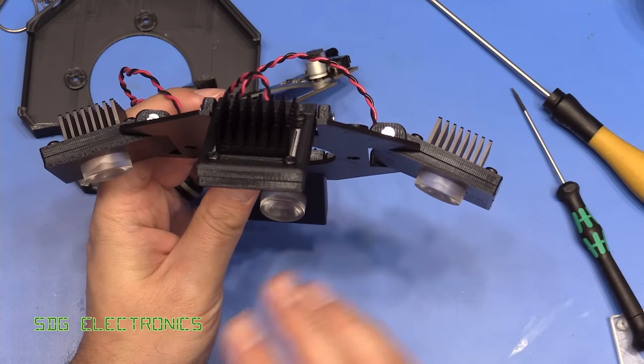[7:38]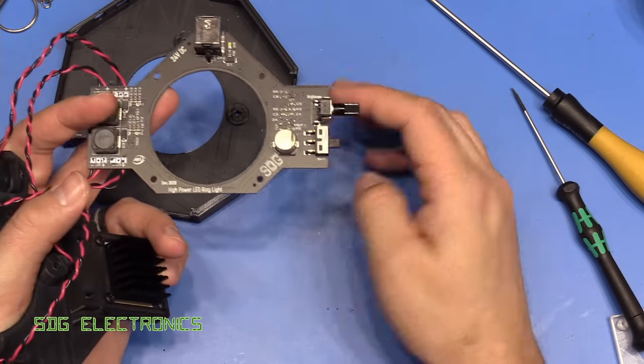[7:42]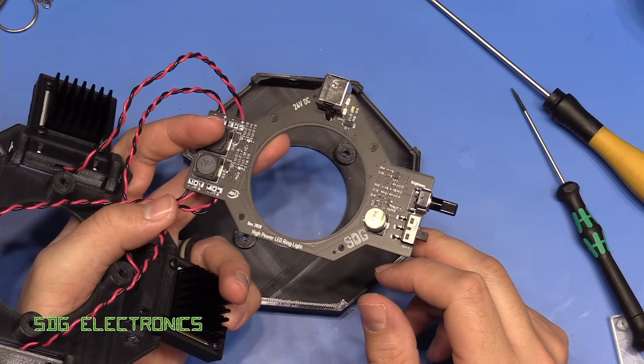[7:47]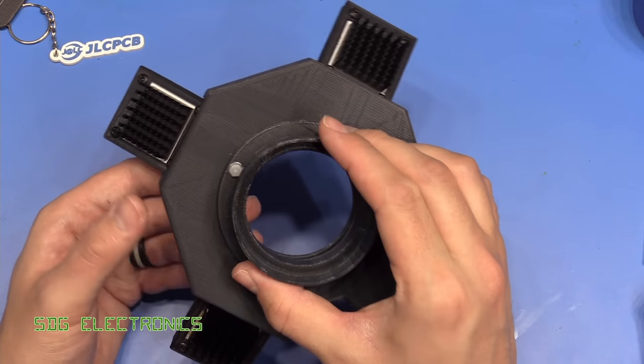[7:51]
So that's the LEDs mounted onto the plate. You do need to adjust the screw tension just enough so that you can still adjust these, but that they're not flopping around all over the place. Obviously, if you're only ever going to use the ring light in one location, you can probably tighten these up. And because of the angle of these, I think it was 60 degrees for this lens, we should be able to get decent dispersion of light anyway in that area. Next thing to do is to get the PCB in here and then just route the cables nice and neatly. And there we go, that's it fully assembled, and it does feel really quite robust.
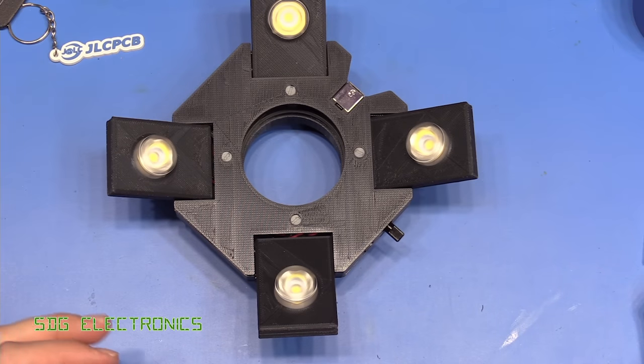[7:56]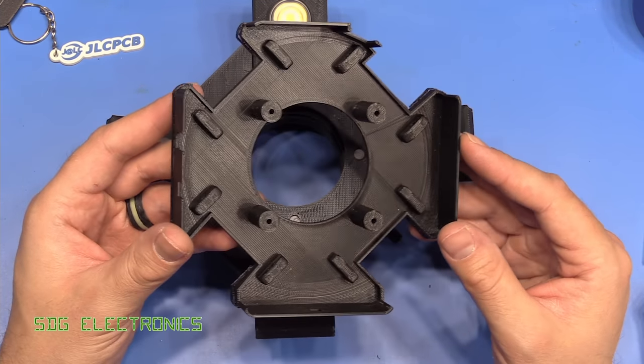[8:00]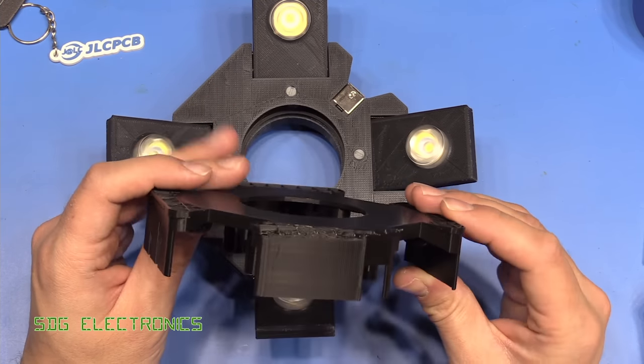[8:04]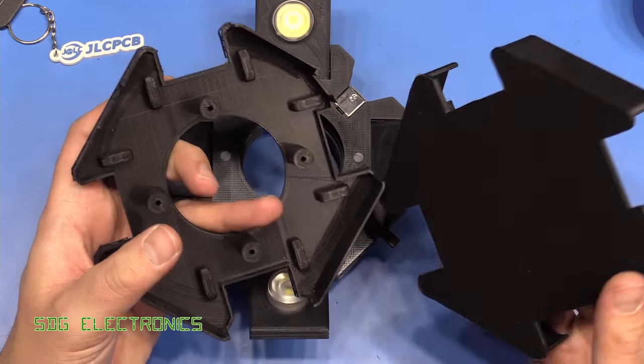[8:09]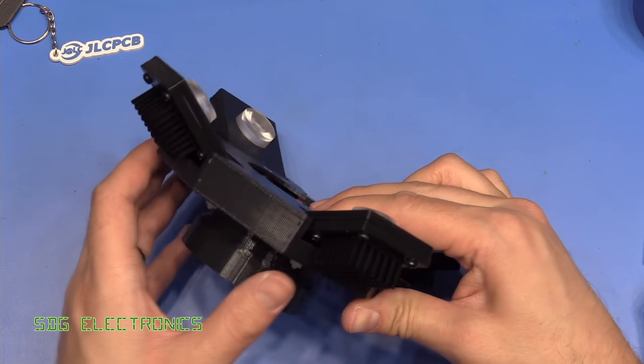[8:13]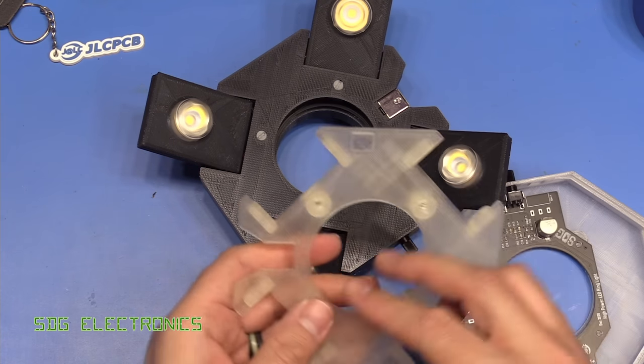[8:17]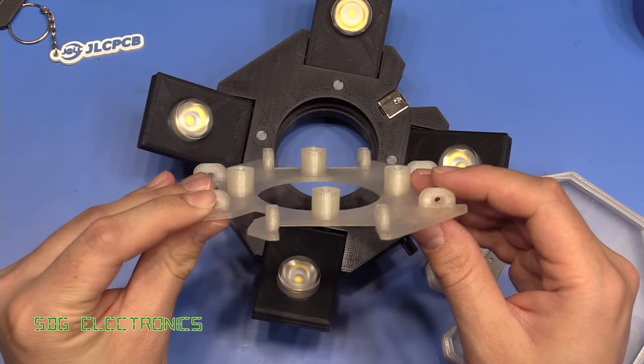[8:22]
There are quite a few parts to the design. Now, some of my earlier designs were sort of trying to fit everything all into one a little bit more. This is one of them. The problem is that it was taking quite a long time to print with some of the designs because we had to cut away lots of material on the inside. And I think by having multiple parts, we can print them actually quite a lot quicker. So for example, the plate that the LEDs mount onto is printed with this surface on the bed of the printer. So this prints really quickly.
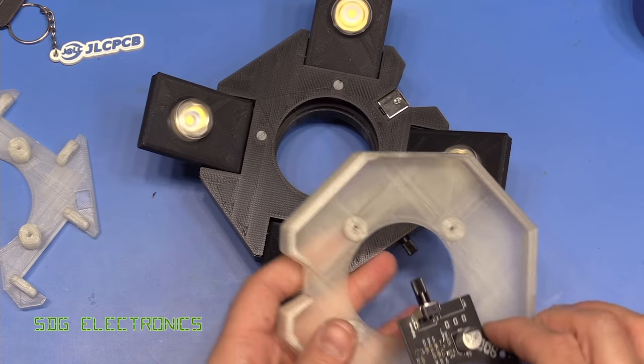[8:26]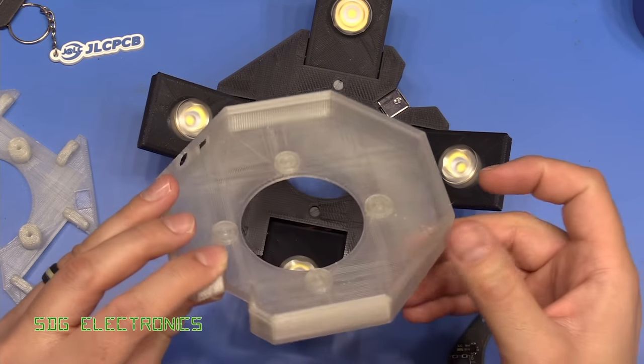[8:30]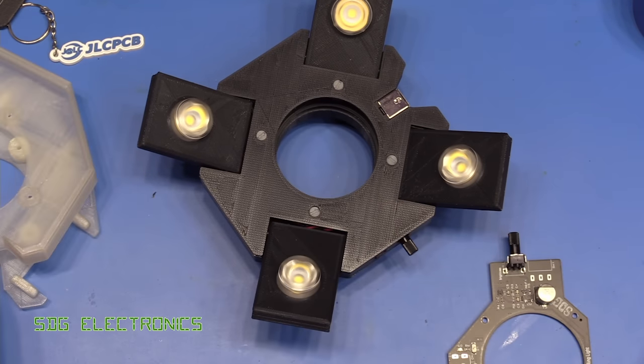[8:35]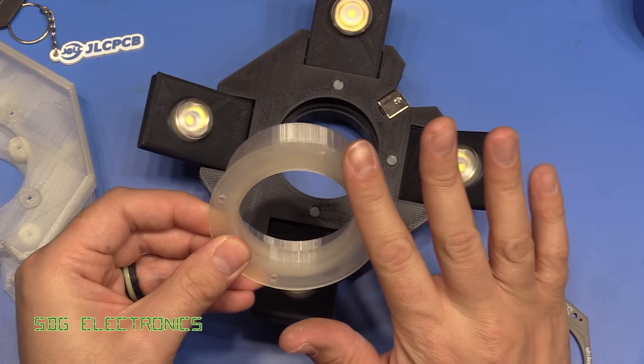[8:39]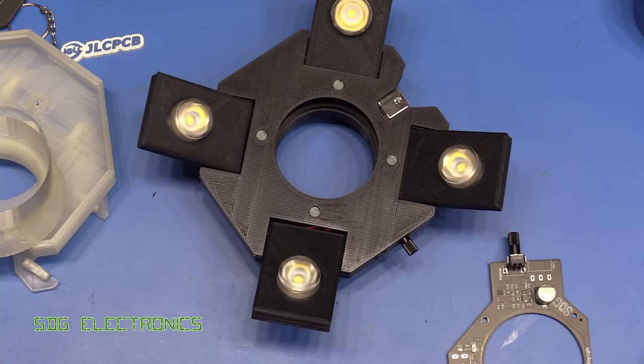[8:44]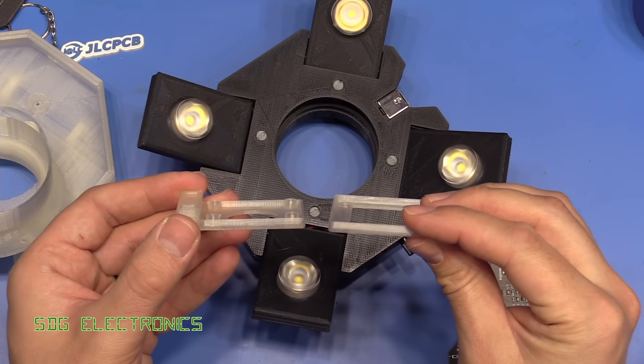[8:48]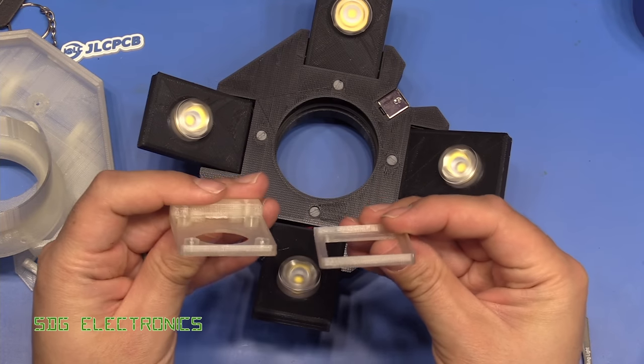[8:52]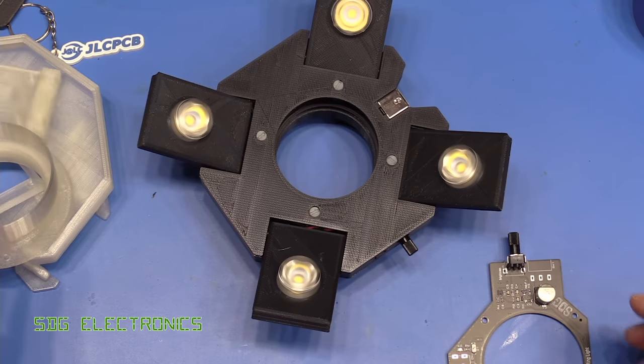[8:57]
Then we have the part that actually houses the PCB. Once again, this part sits on the bed, and there's no overhanging part, so again, this prints really quite quickly. The mount onto the microscope sits on a flat surface, and then again, it's just a vertical print, so this only takes a couple of hours. And then the LED mounts themselves. You can actually print all of these at once on the same bed. You just have that side facing down, so they've all got a nice flat face, which means that it's a lot easier to print.
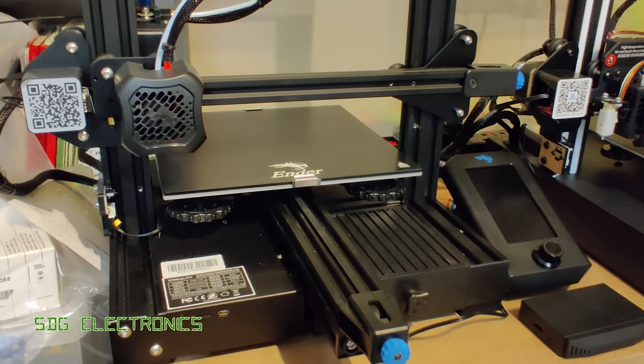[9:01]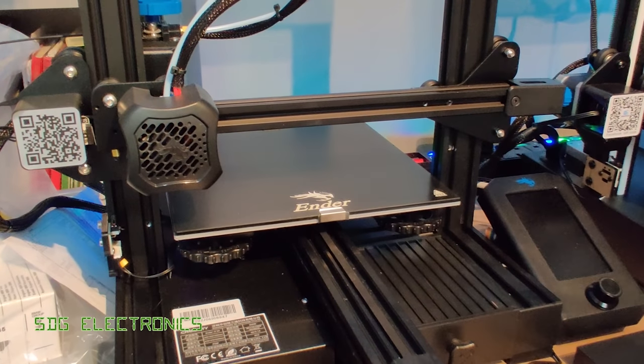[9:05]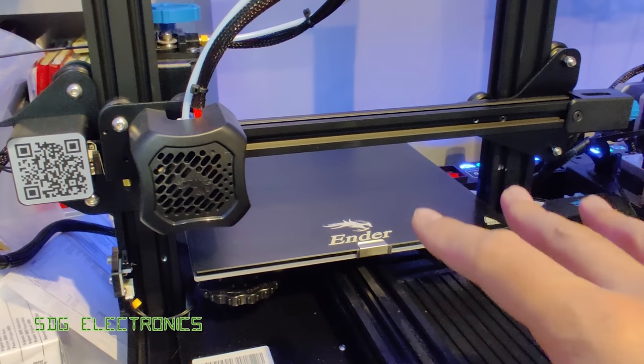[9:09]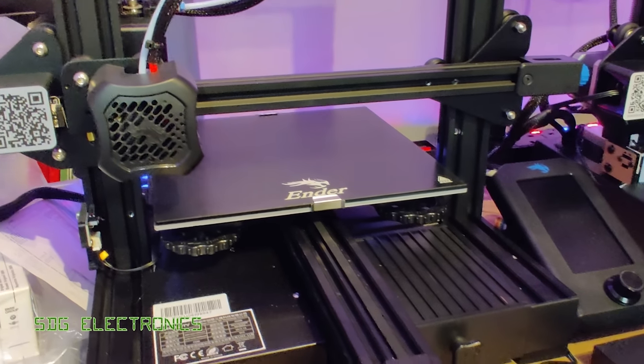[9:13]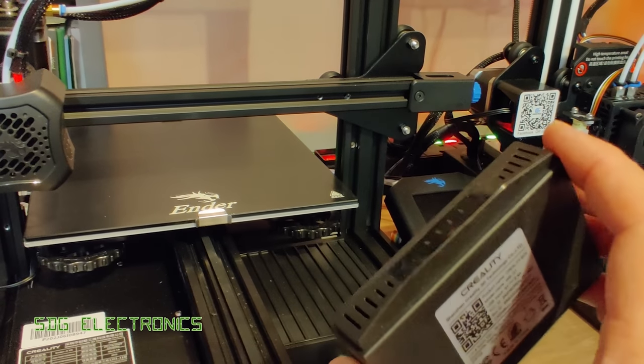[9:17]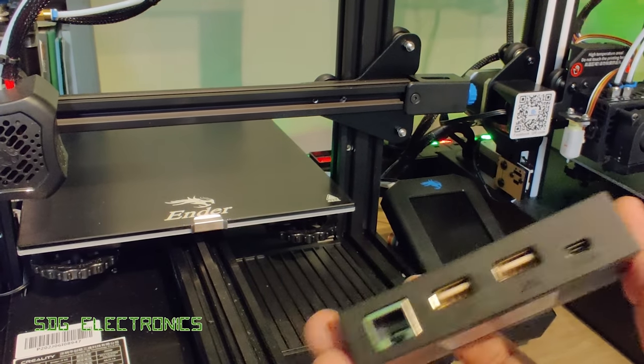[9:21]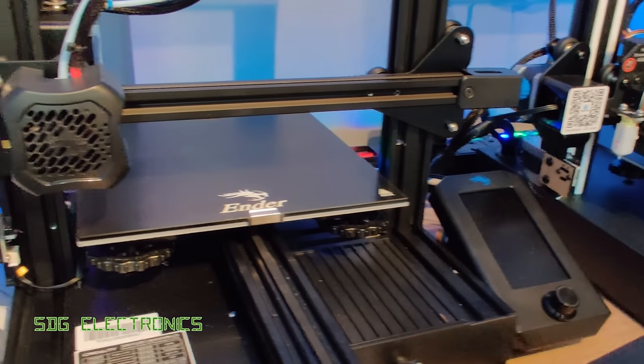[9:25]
Just in case anyone's interested, for the 3D prints, I've primarily been using the Ender 3 version 2, which is actually a really nice printer. All you have to do is pretty much set it up once, and then it just works every time. There's no faffing around, it just seems to work really well for me. I've recently just got the Creality box, which allows you to control it through the cloud, so you can check the progress of your print from your mobile phone. We'll have a look at this in a future video.
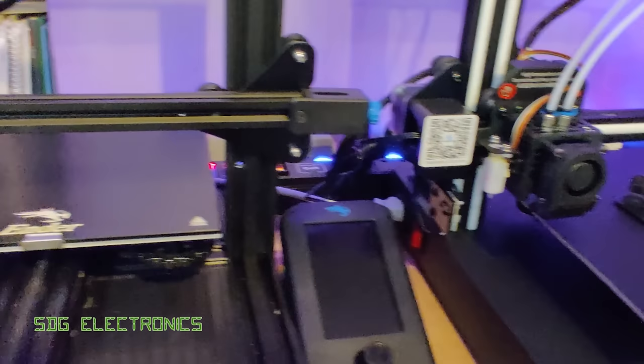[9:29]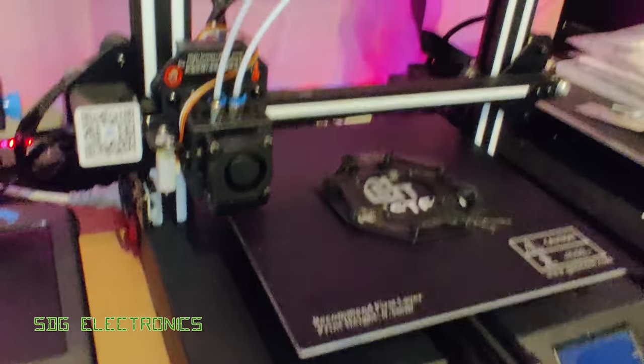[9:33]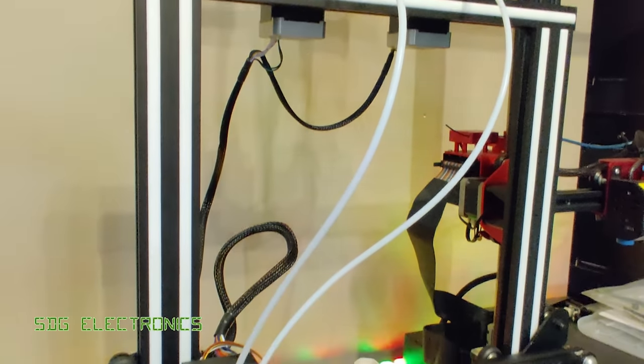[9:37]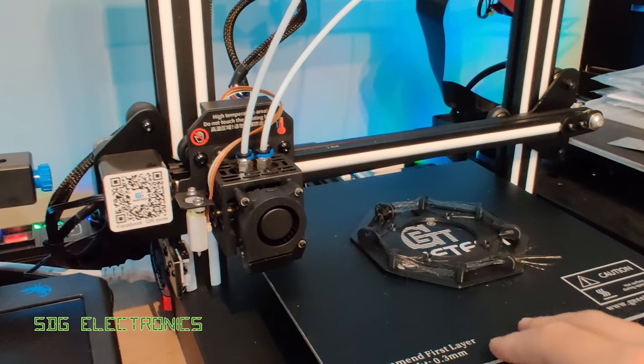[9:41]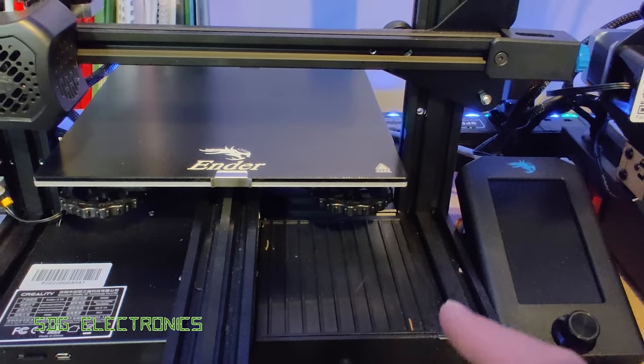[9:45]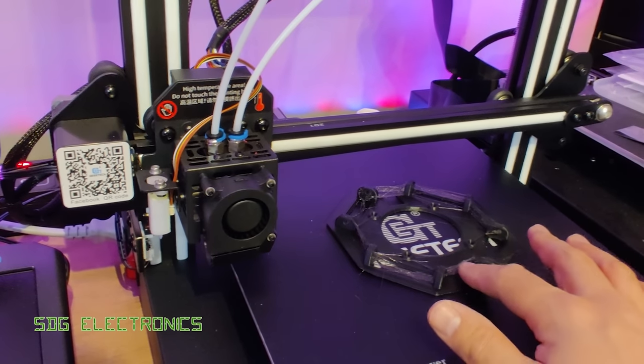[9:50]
But this has been a really good printer and actually prints really nicely. I've just recently been sent the Geeetech A20M, which is a dual filament printer. And this is actually a little bit quicker than the Ender, but it's also quite a bit louder. And the last print went completely wrong. I've never had a print go wrong on the Ender V3. This one, looks like the retraction didn't work properly.
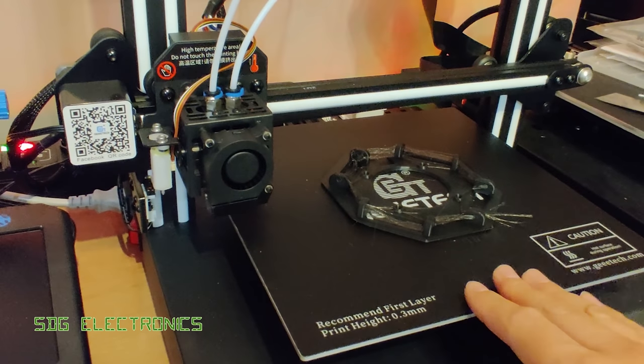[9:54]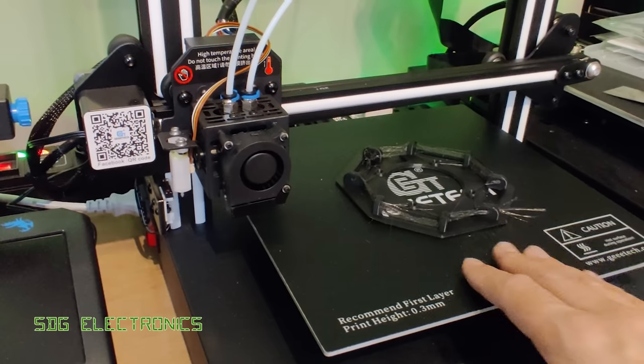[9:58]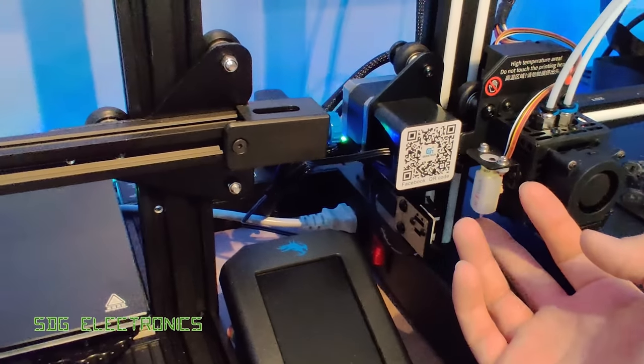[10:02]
Also, I can't get this print off the base plate, so I do need to get a glass base plate for this one to facilitate the removal of it. But the little BL Touch leveling sensor seems to work quite well.
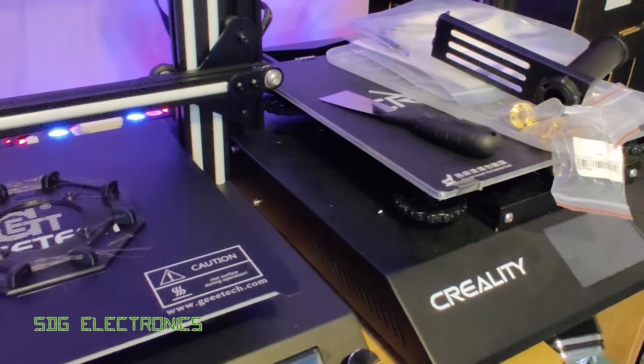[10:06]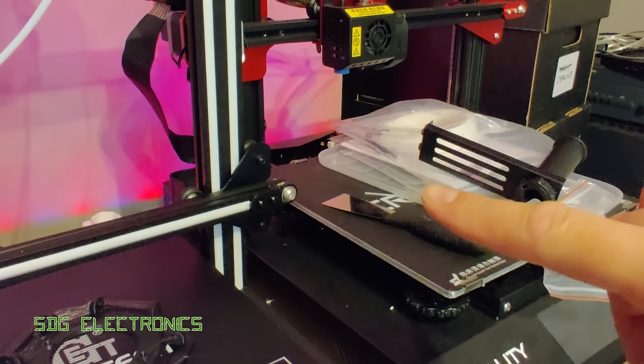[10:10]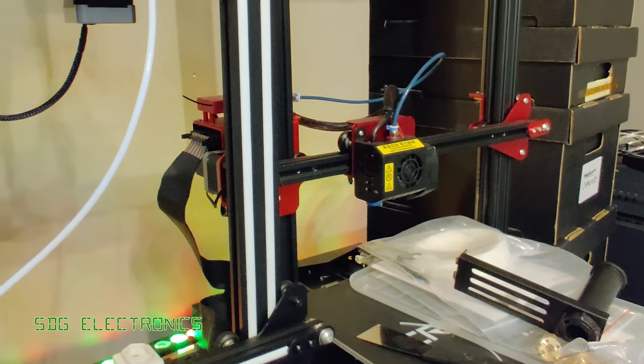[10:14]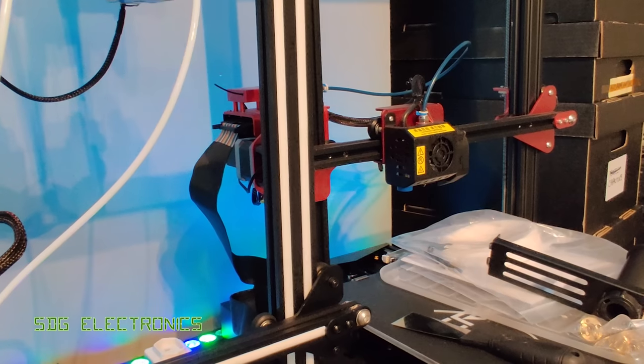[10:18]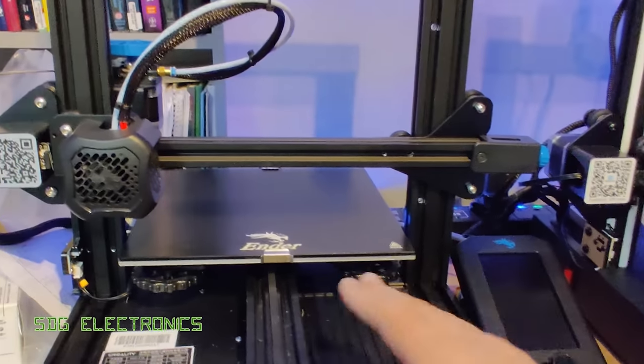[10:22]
And the CR10S Pro, unfortunately, doesn't really get used because there's a few problems with it. And the dual lead screw design on the Z-axis, for me, just doesn't work very well. I know there's some mods and all that kind of stuff, but I haven't got time to play around with it at the moment. So it ends up getting mainly printed on the Ender 3 V2.
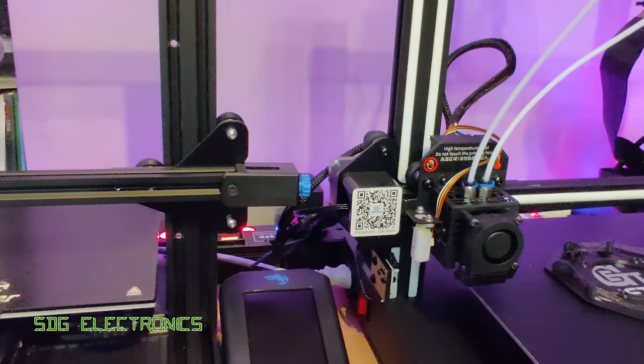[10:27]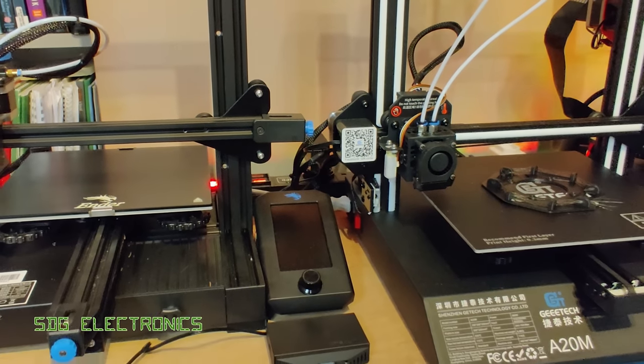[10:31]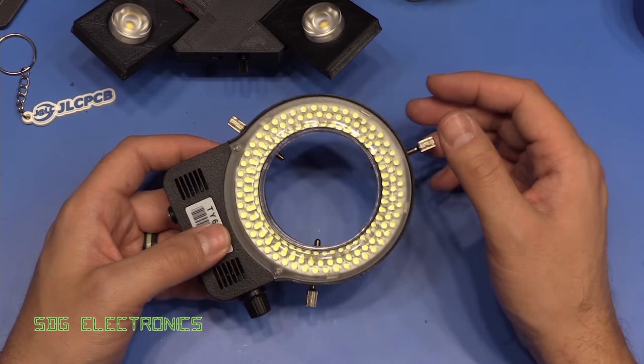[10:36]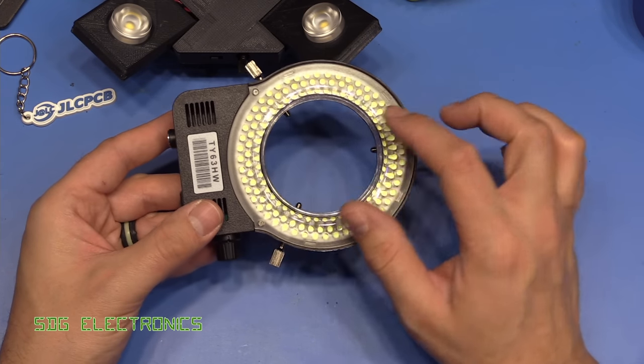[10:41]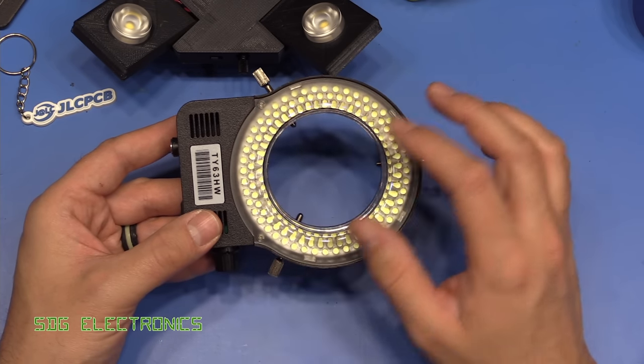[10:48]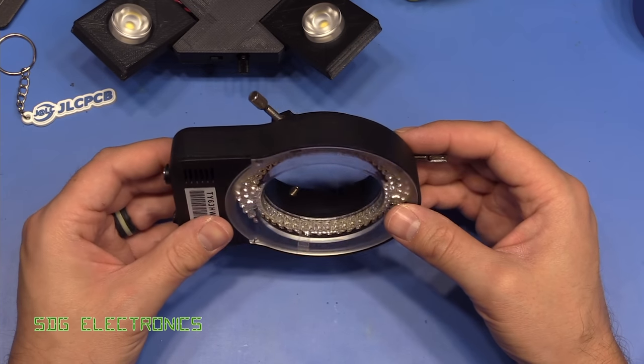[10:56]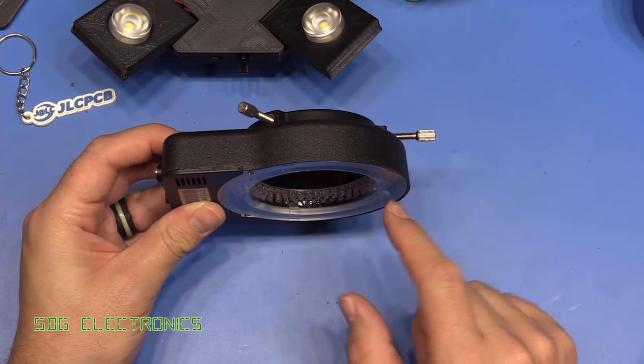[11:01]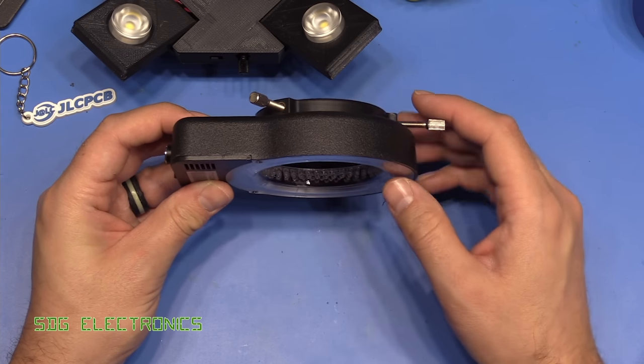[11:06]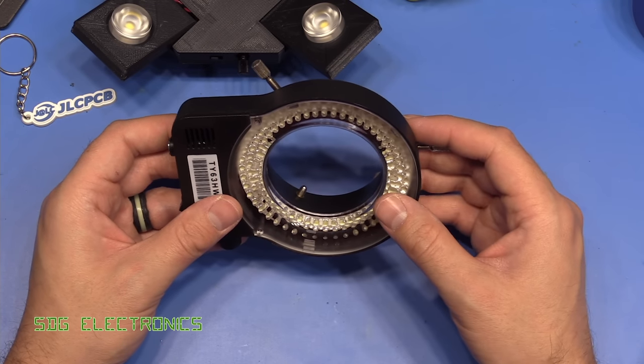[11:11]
Now, if we think where we've come from, this is an original ring light that comes with one of the standard microscopes, and it's just a whole load of 3mm LEDs, pretty much all wired in parallel, so there's current sharing, but the LEDs aren't very well matched, so sometimes you'll see some of them are a little bit brighter than others. Consequently, quite a few of them do tend to burn out. And the main problem that I was finding with this is that you have the lens poking through, and because the LEDs are so close to the lens, you get reflections vertically straight up into the lens, and sometimes you can't capture things very well on the camera. It doesn't look too bad by eye.
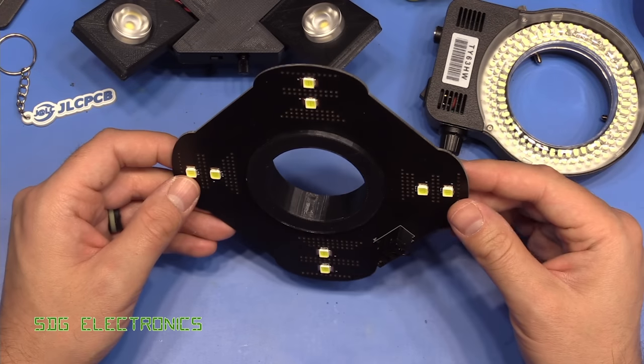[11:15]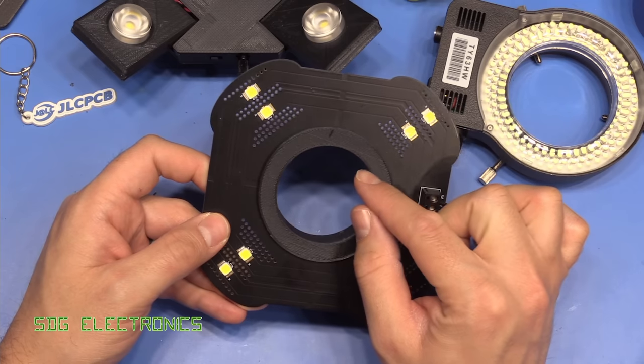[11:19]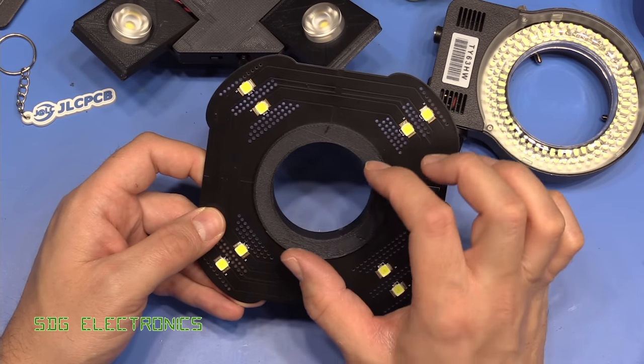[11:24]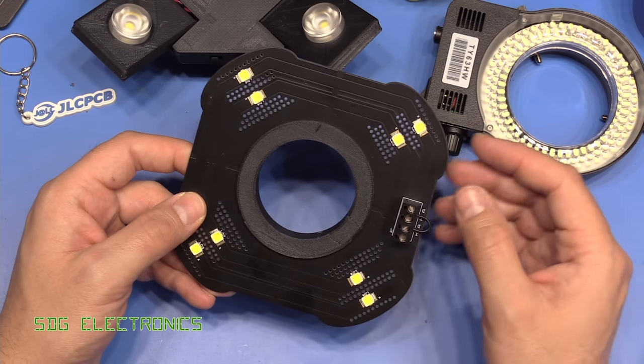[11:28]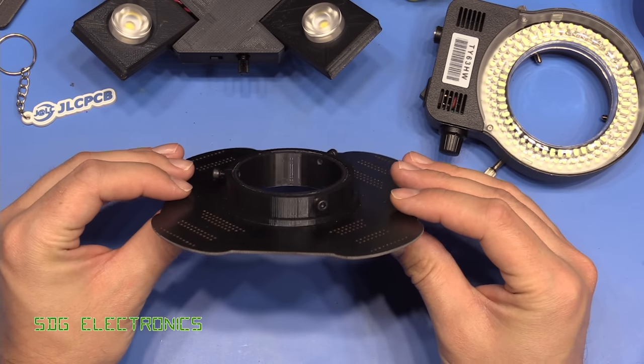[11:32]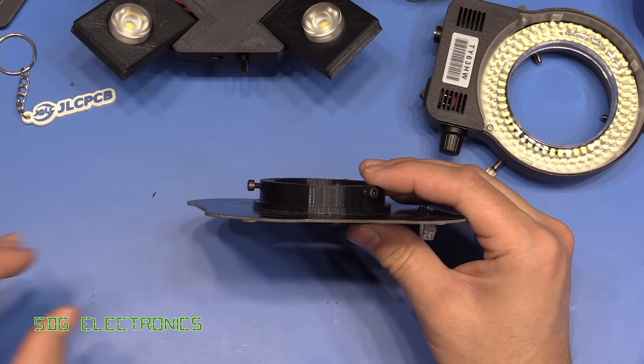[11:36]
So if you recall from my first video on this, this was the first sort of proof of concept, a very simple design, just moving the LEDs away from the lens on the microscope so that we didn't get quite so many reflections. Also trying out higher power LEDs rather than having all of these. And this worked actually really quite well. Very simple design. And the microscope mount was something that I was going to transfer over to this PCB.
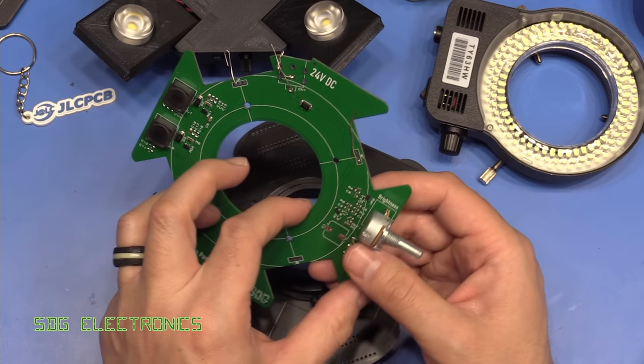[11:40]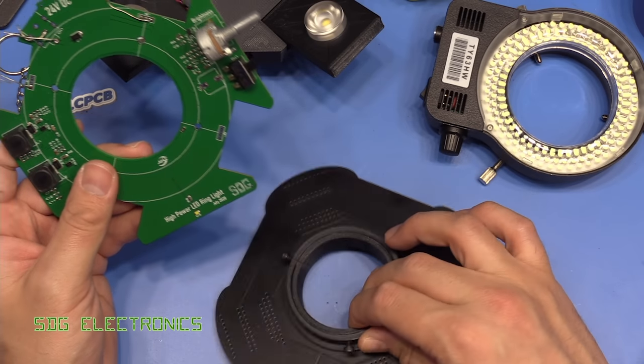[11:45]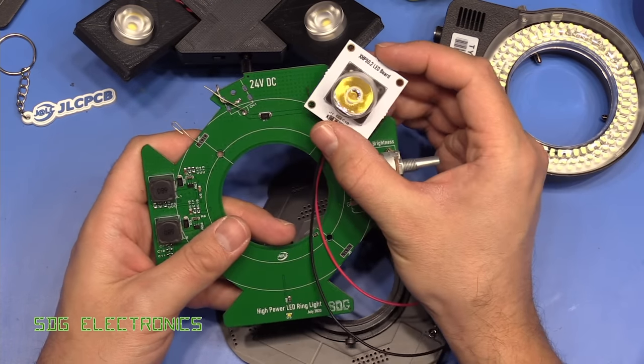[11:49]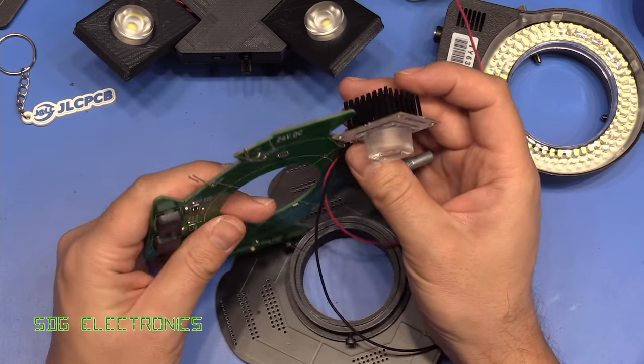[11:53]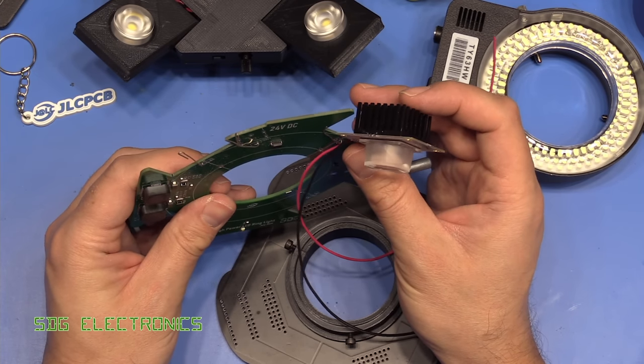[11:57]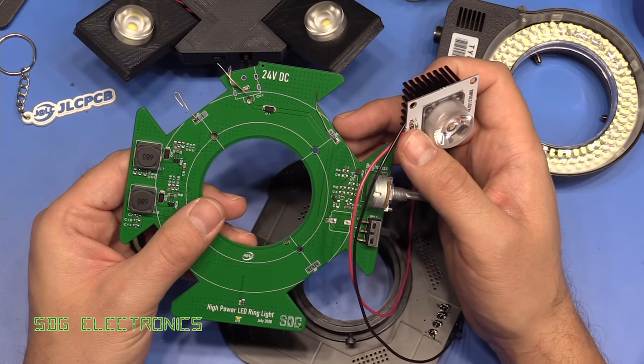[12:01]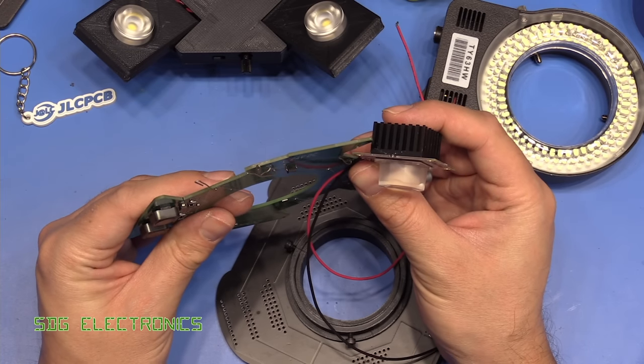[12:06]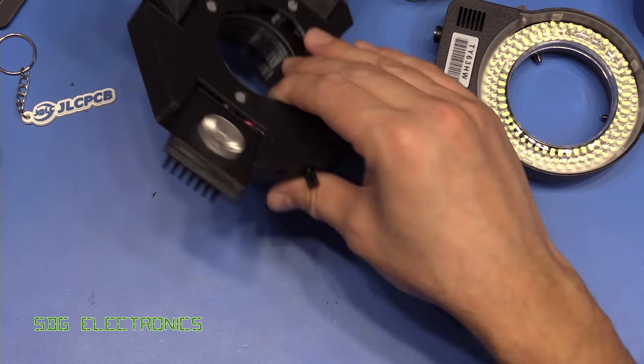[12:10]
This is the one that you're probably all familiar with, where I had some of the problems with the drivers. I was simply going to put this microscope mount through this PCB, have four of these LED boards, and solder them with quite solid wires and nothing else. It would just simply be a bare PCB, and then obviously with the LEDs pretty much at a fixed angle. It depended on how thick the wires were that you used to attach it, but I was just going to use solid wire and pretty much have them solid. So we've come quite a long way since then.
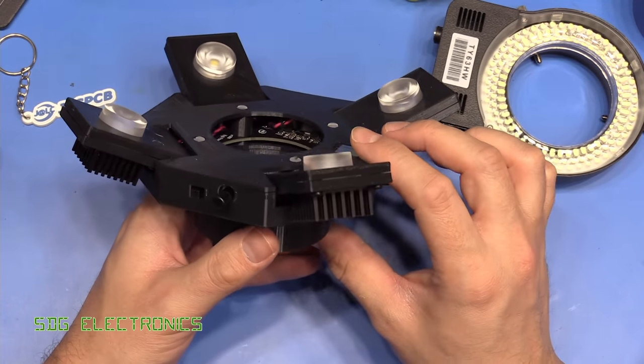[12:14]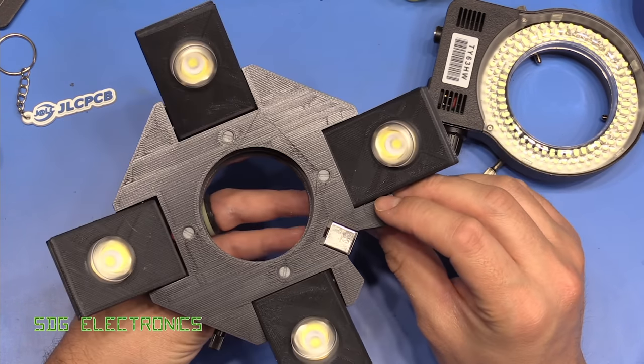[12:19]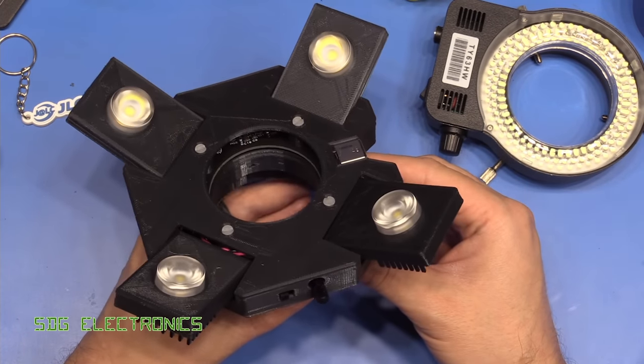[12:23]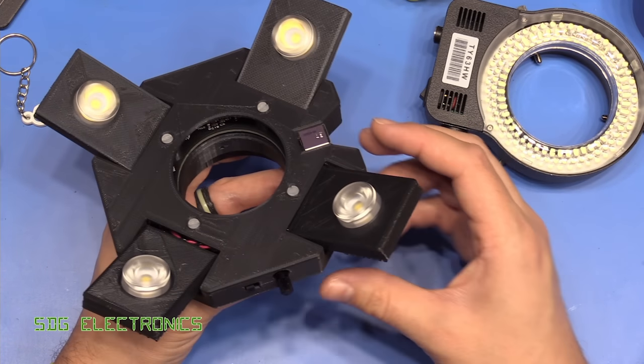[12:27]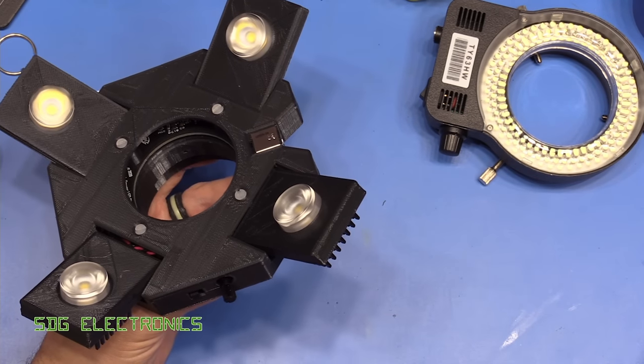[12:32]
Obviously, you don't have to build an entire 3D printed case, but I will include all of the files on my website. Now, one thing we haven't done, obviously, is actually test whether this works, and I actually haven't tested this at all. I'm putting faith in that I've designed the schematic correctly. So let's see what happens. Let me just find a cable.
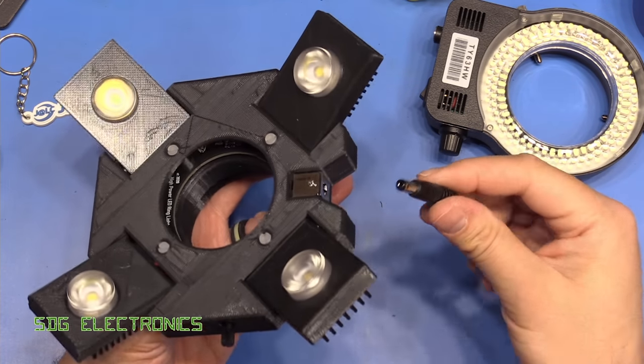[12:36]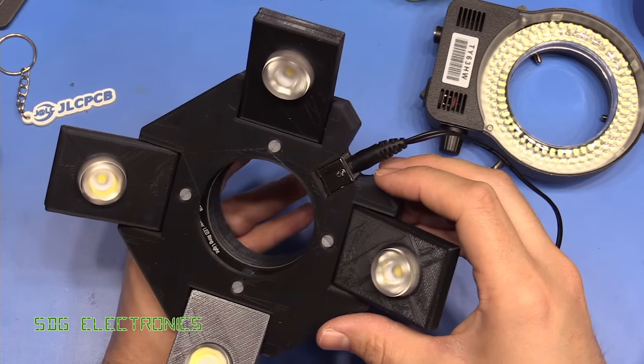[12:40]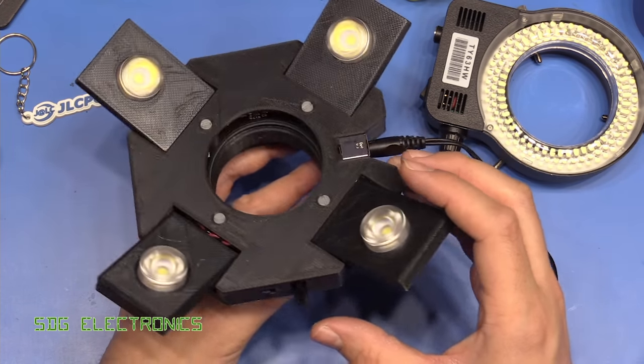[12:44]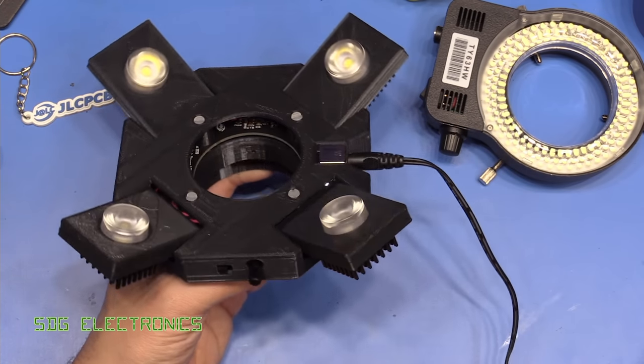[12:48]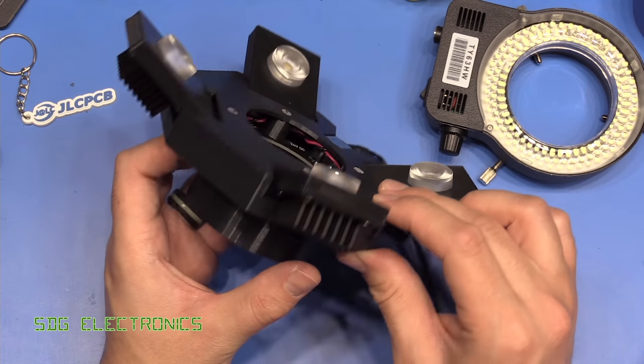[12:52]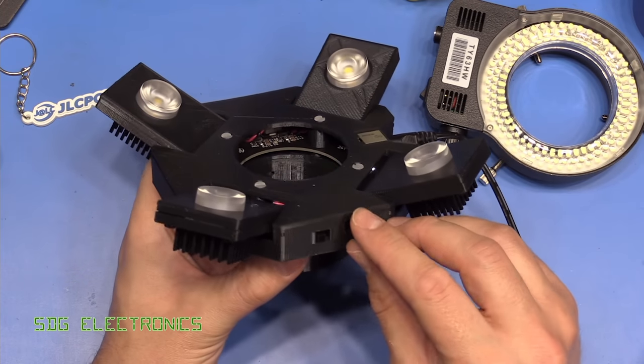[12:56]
Right, there we go. I've got one that's a 24-volt power supply. And I didn't put a hole for the power LED. That was a bit of an oversight, but I pretty much had enough with designing the chassis for this. I just wanted it done. That's partly where that clear version came from. I was thinking about just having it all clear, but since the microscope's black, I decided to have it black. So let's turn it on and see what happens.
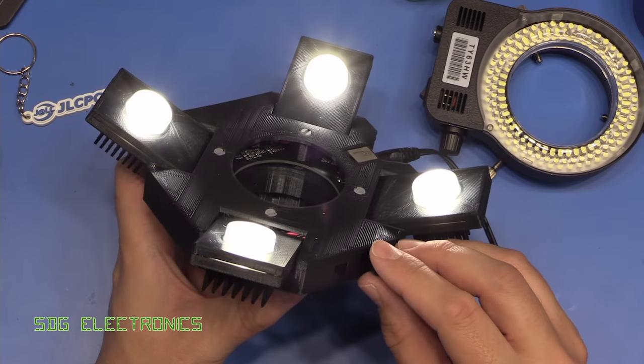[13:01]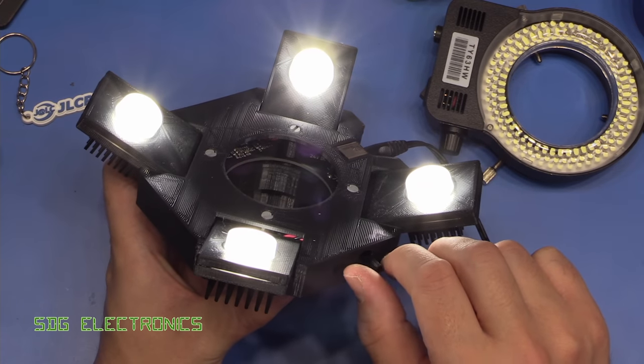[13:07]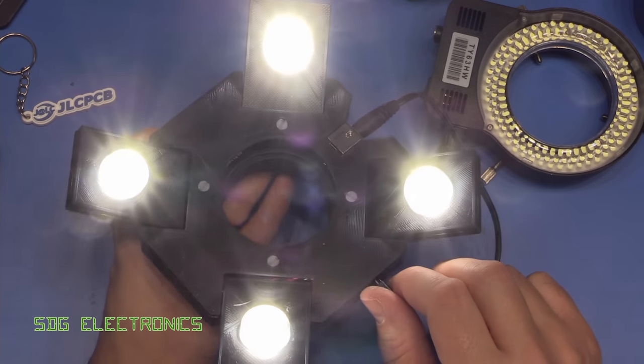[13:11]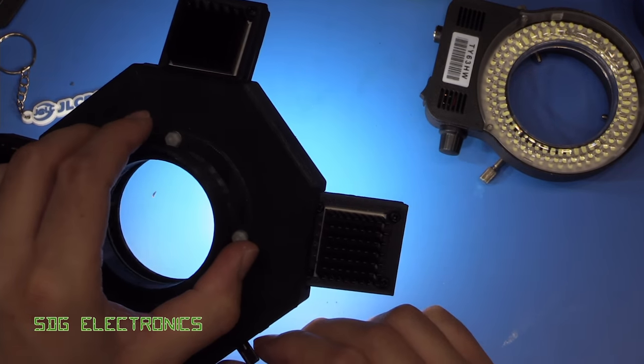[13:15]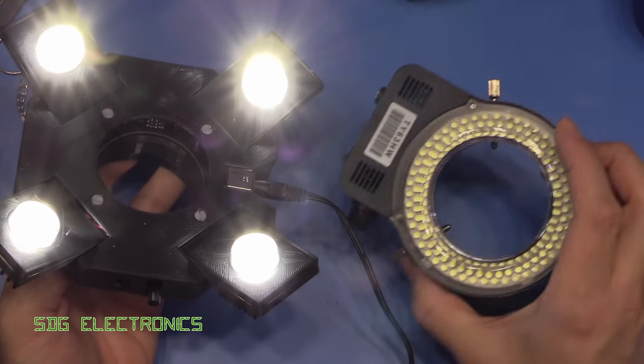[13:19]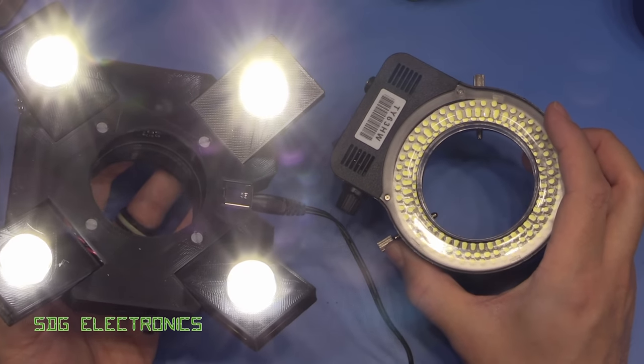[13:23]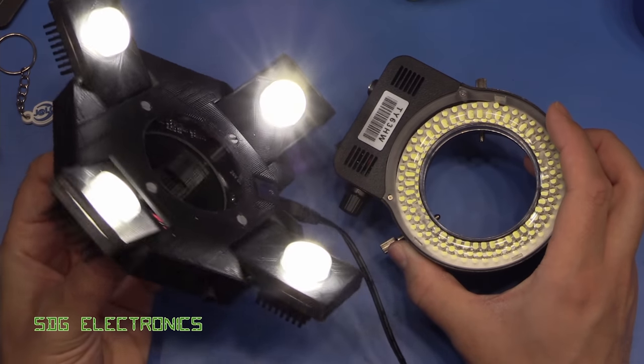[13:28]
And there we go. That seems to be working nicely. We do have our brightness adjustment all the way down to minimum and all the way up to maximum. That's drawing 20 watts, so each LED is dissipating 5 watts each. And that really is quite nice and bright. So what we're going to do now is compare the two. So we'll put this on the microscope, have a look at what the image quality looks like, and then see if we can see any difference by changing it to my high power LED light.
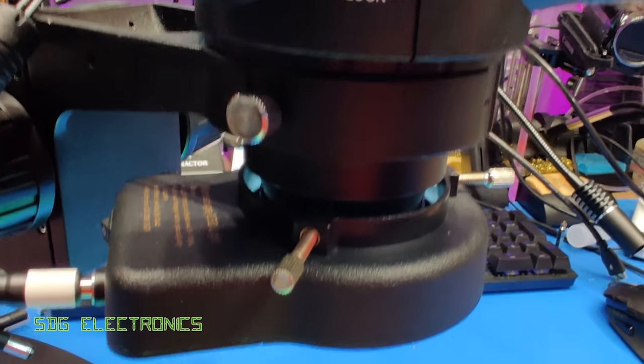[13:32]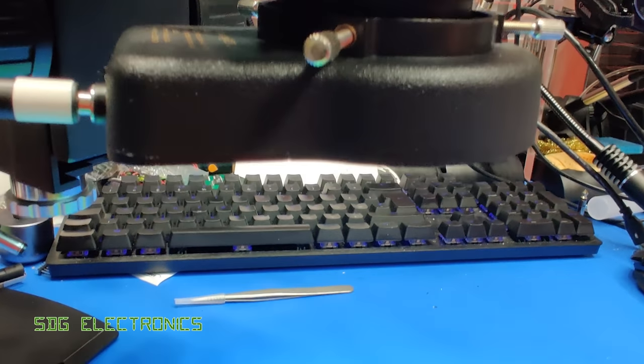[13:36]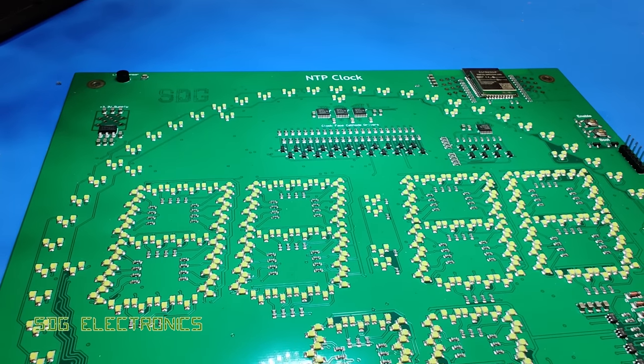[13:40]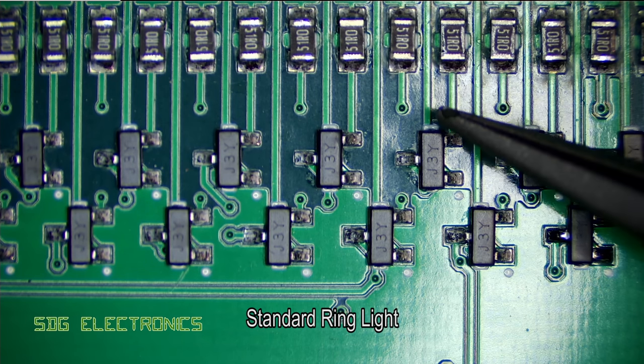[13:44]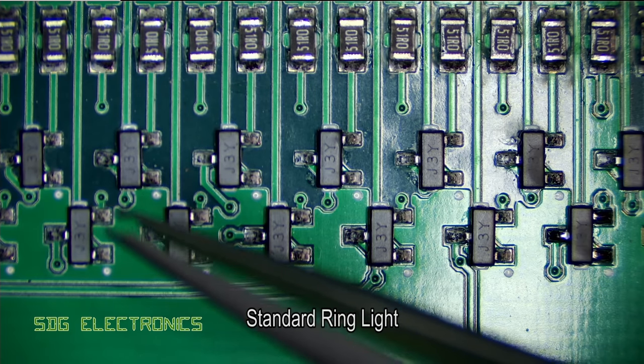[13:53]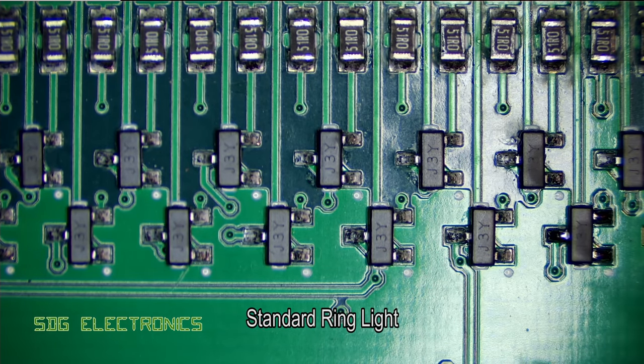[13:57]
So here we can see the original ring light mounted onto the Amscope microscope, and then that is looking down at the LED clock PCB. And so what I'm seeing is quite a bit of reflection in the region here because the light is bouncing directly off the PCB and back into the camera lens. And then also it's a little bit dim around the edges. It's certainly not too bad, but the illumination isn't that great. The IMX290 camera is working quite hard at the noise reduction to try and give us a nice clear image.
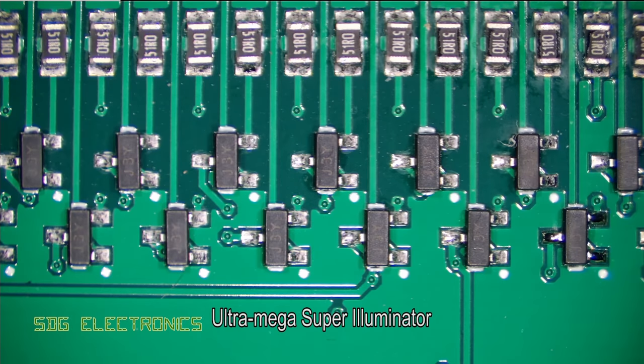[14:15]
So this is just at 3.5 times zoom. As you zoom in, you do lose quite a bit of brightness, but what I want to do is try and swap out the ring light and keep everything exactly in place. And now I think the image looks quite a lot different. We're not seeing any of those horrible reflections up here, and everything looks really quite flat and even across the entire image. That's with the LEDs at about half brightness.
I've not really noticed any improvement if we increase the brightness further. The camera just seems to compensate for it at that point. But about half brightness seems to be quite a decent compromise between being blinded when you're looking at the PCB and having a really nice image quality.
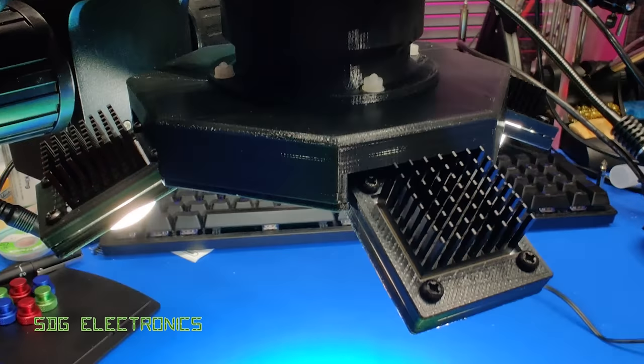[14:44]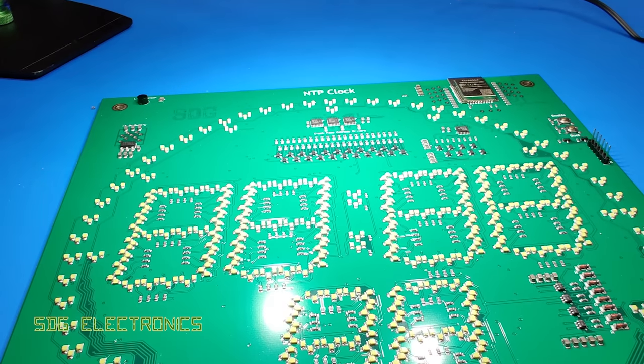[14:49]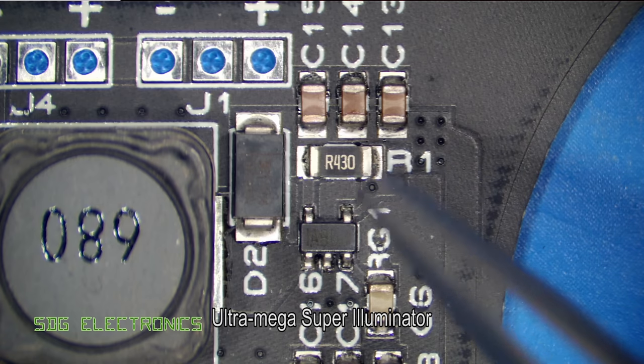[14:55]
And then here is the Mega Illuminator lighting up the clock PCB once again. I sometimes find that black PCBs can be a little bit tricky to film, so we're looking at a black PCB, and the black looks really quite nice and matte here, and I think you're able to see everything quite clearly.
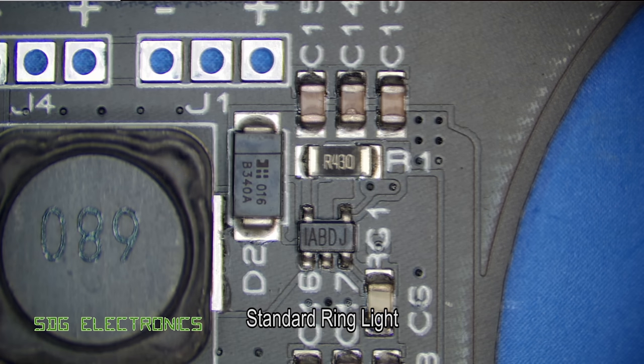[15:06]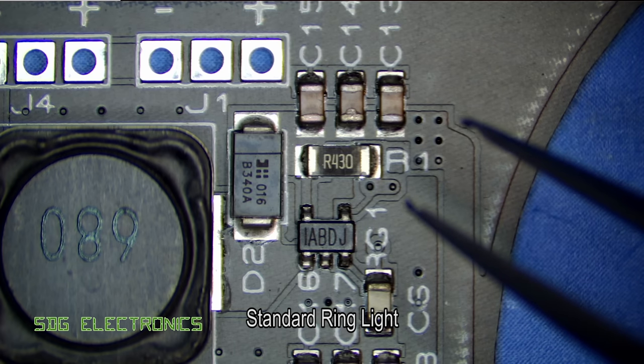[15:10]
Let's have a look at what it looks like with the original ring light. And there we go, with the original ring light, to me that looks pretty terrible. Obviously you can see what you're doing, but particularly for filming, that doesn't look anywhere near as aesthetically pleasing. So I'm quite happy with how that looks.
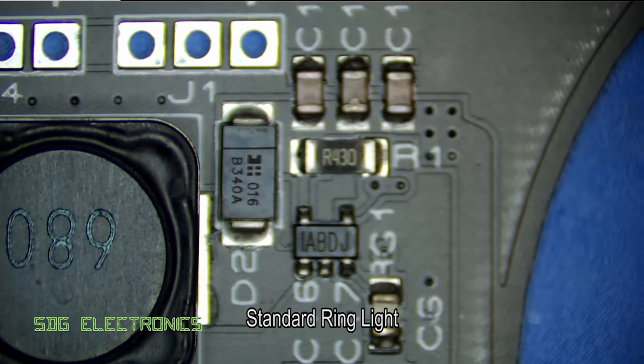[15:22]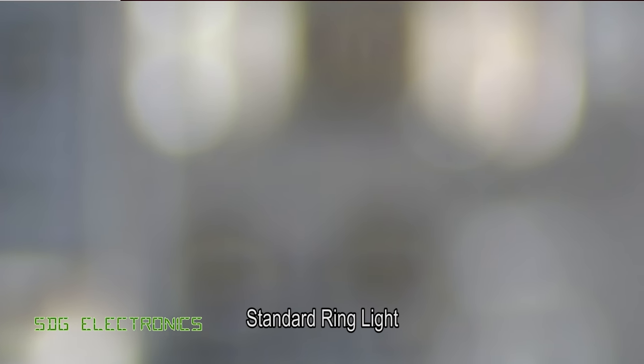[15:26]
Just before we finish, I thought we'd zoom in at maximum zoom and see how the brightness and the image quality changes. So I'll just focus it up. So this is at 22.5 times zoom, which is maximum with the 0.5 times Barlow lens. It certainly doesn't look too bad, but it's starting to look a little bit dim through the eyepieces.
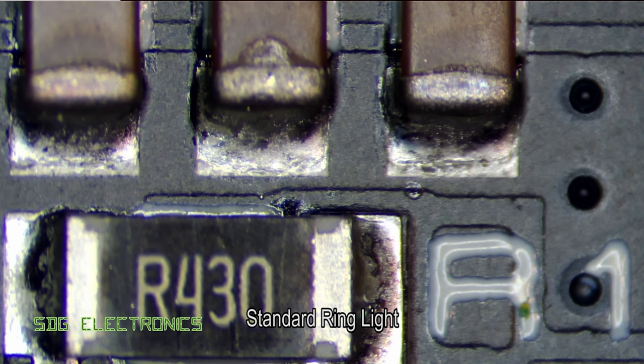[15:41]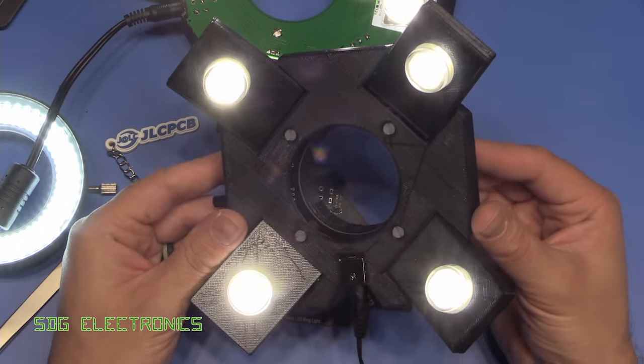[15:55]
Let's swap it out for the new ring light once again. I think I just nudged the microscope slightly, a little bit tricky at these high zooms, but certainly to me that looks infinitely better. So I'm really quite pleased with how this is working. So I'm pretty happy with how this has turned out.
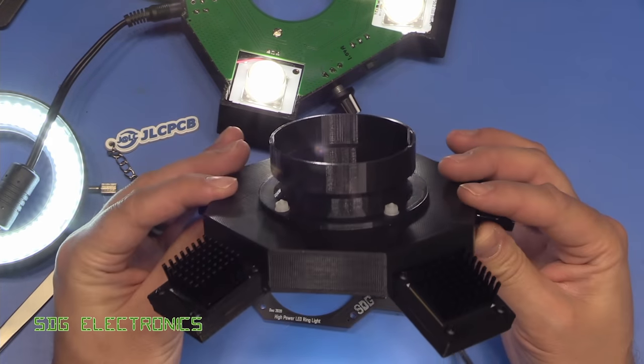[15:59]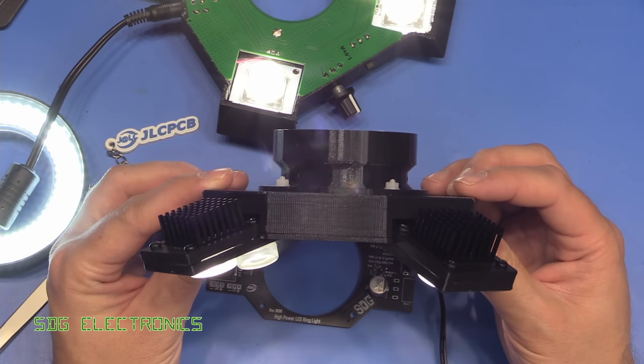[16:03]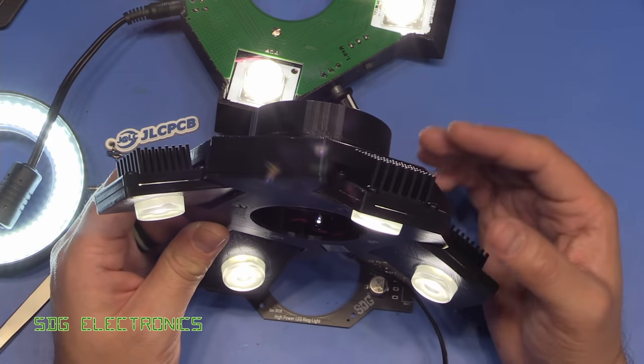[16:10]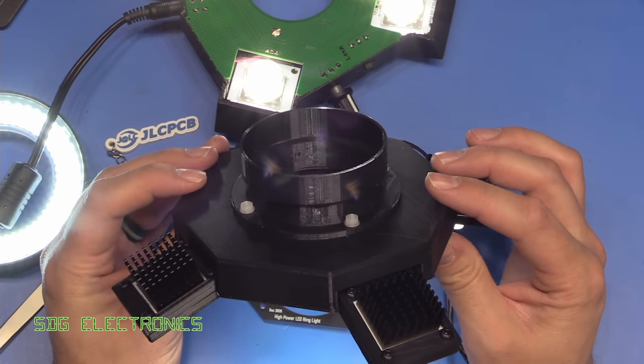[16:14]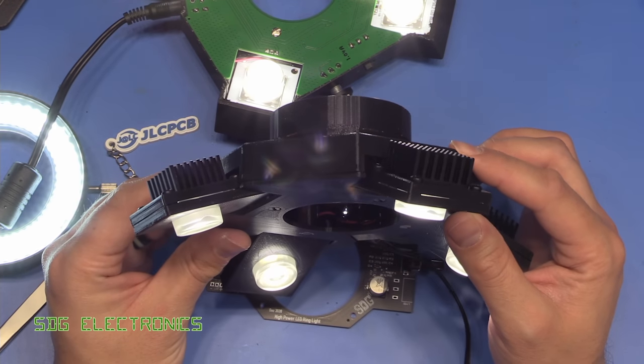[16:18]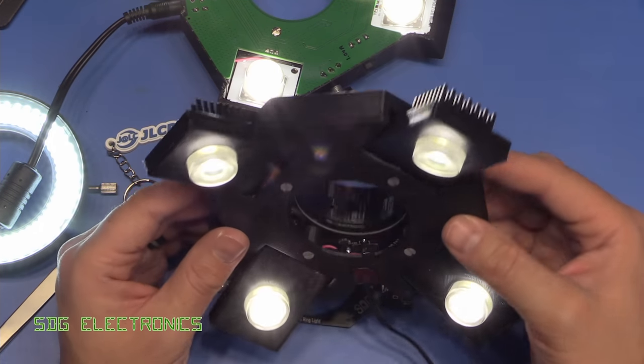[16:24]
It's been quite a lot more work than I'd hoped to get to this point, primarily because I ended up designing a chassis for it. The original PCB with the LEDs hanging off it would have been nice and quick to do, and obviously would have been functional, but I wanted something that looked a little bit nicer and also gave me a little bit of practice once again with the 3D tools. It's been quite a while since I've used some of those and also got some use out of the 3D printers. So this design addresses quite a few issues.
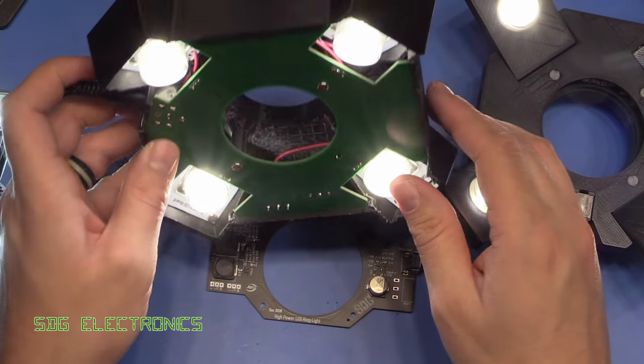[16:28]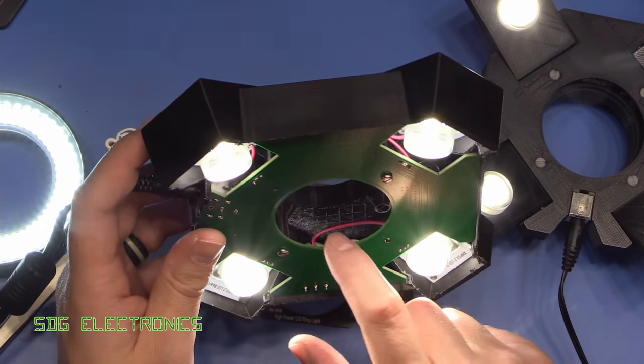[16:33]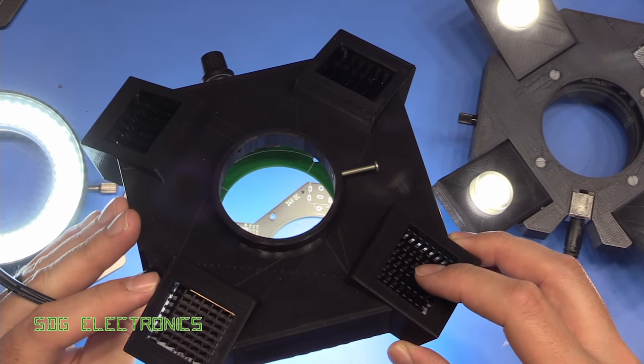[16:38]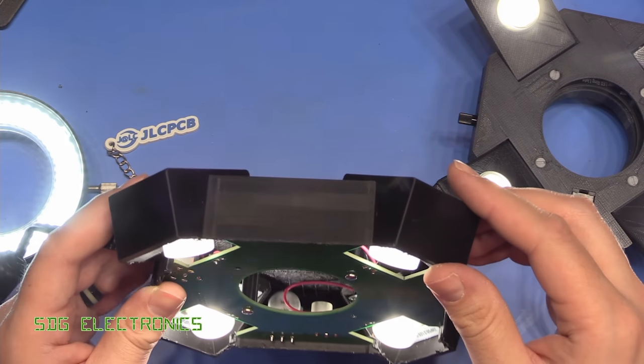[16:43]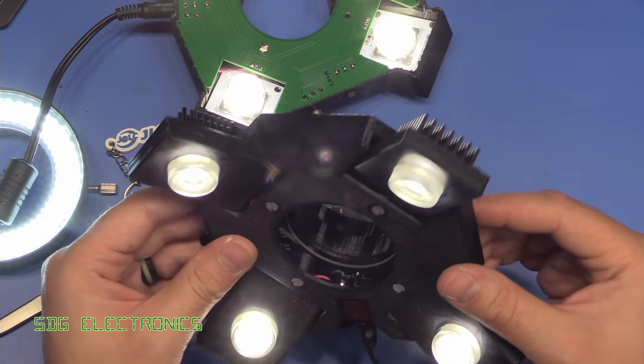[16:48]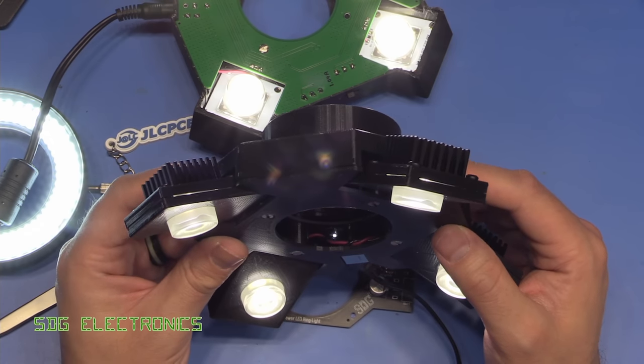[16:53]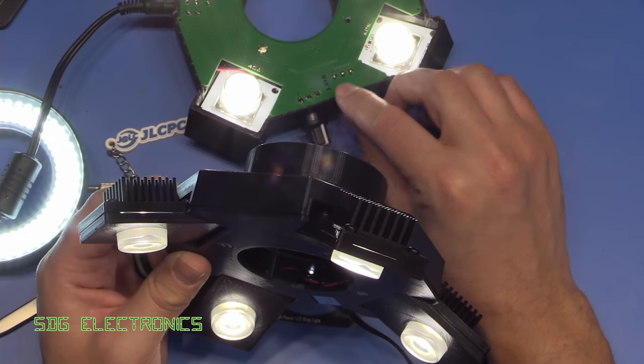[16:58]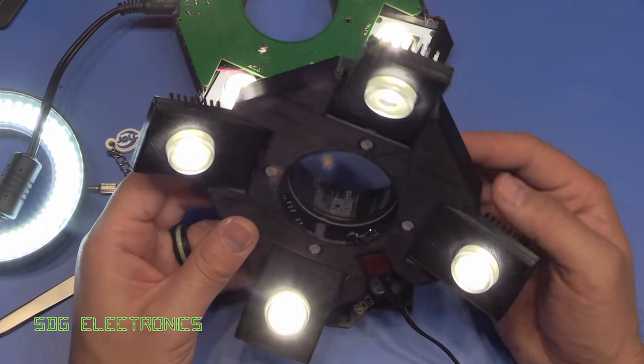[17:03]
This was the design that I've been using for quite a long time now, and this is the one that was sort of an all-in-one, but I had to cut away loads of material, and also it did have the problem that the heat could get out from the heat sinks, but there wasn't really a very easy airflow path in, so the LEDs were getting a little bit warm. This one has the heat sinks exposed, so we should get quite a bit more heat dissipation. But in the end, I've never really needed to drive it anywhere near full current. This one's set to 1 amp, pretty much full current. Half an amp seems to do just as well for the LEDs and the camera that I've got.
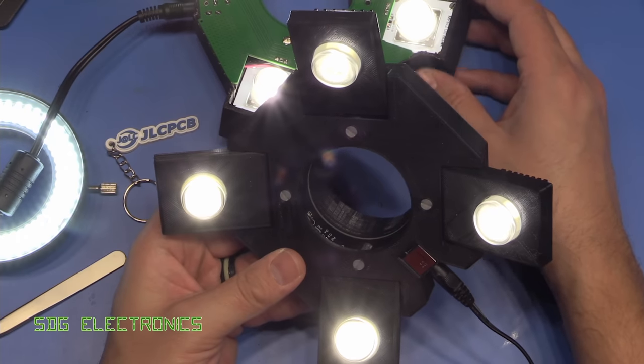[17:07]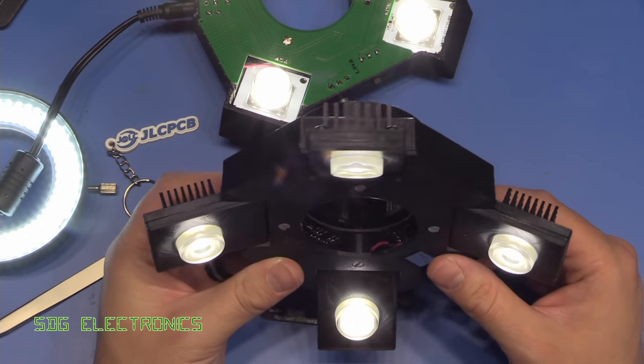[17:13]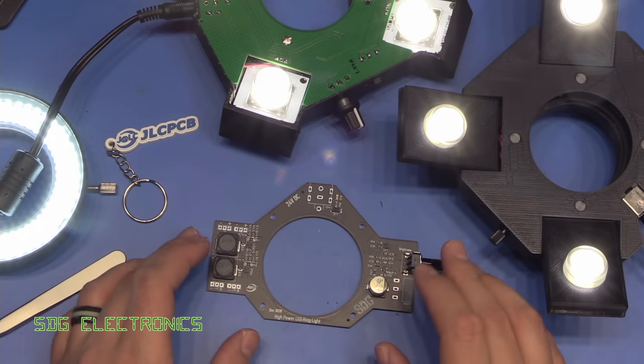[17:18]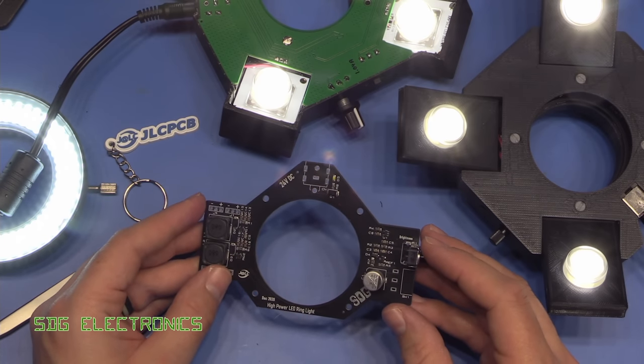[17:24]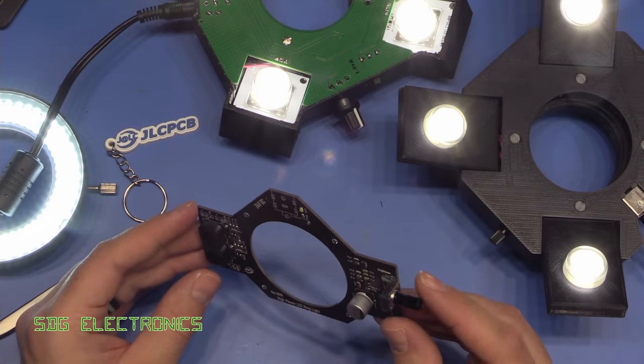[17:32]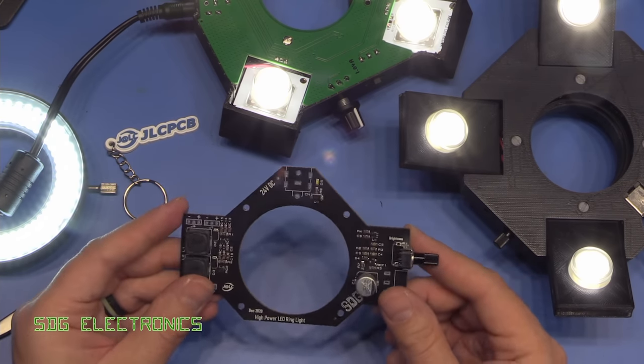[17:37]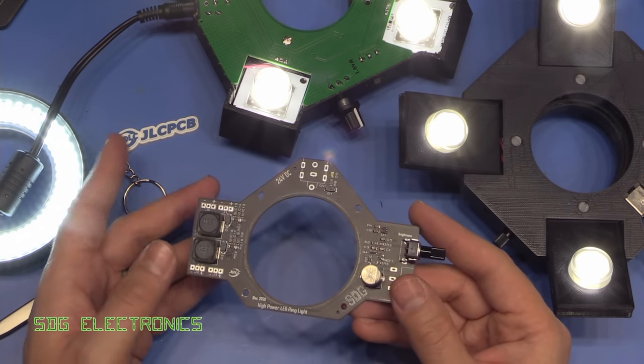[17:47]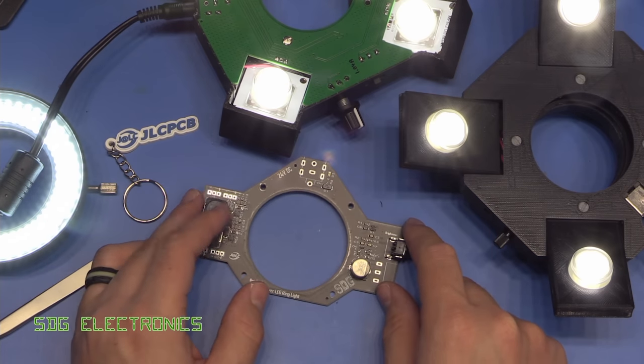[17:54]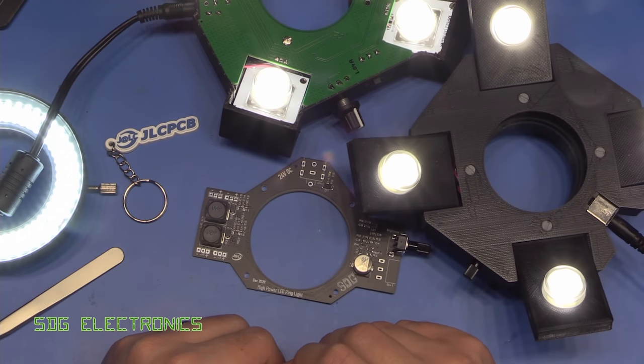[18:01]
So hopefully you found the video useful and interesting. It's been a long time getting to this point, but I think all of my future videos where we use the microscope are now going to be using this nice new microscope light.